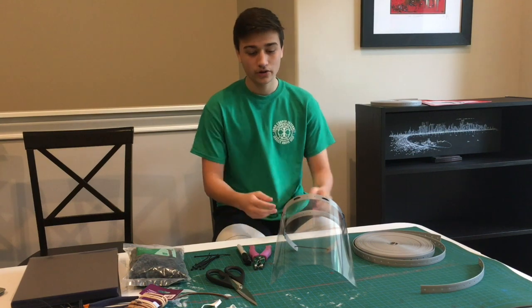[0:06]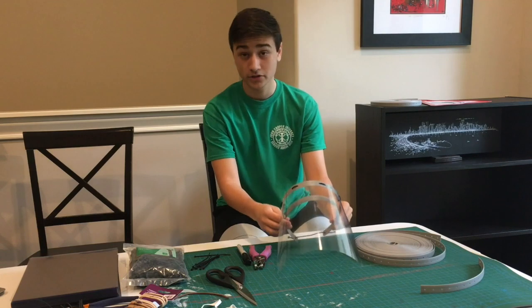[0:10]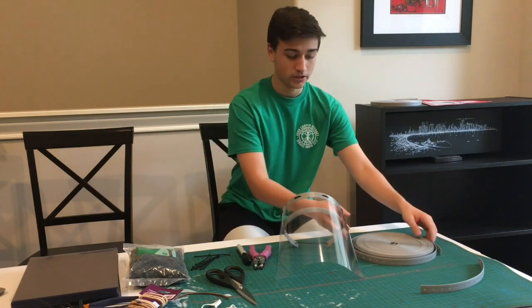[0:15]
Hey guys, this is a tutorial on how to make face shields so you can donate them to doctors and hospitals nearby. So starting off with some of the supplies and materials that you will need to construct this.
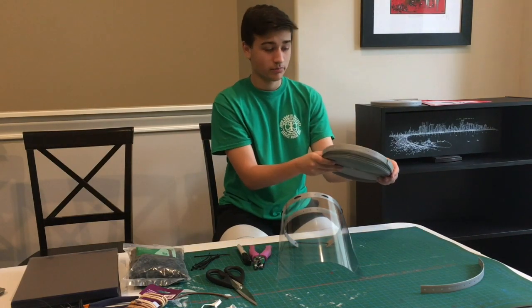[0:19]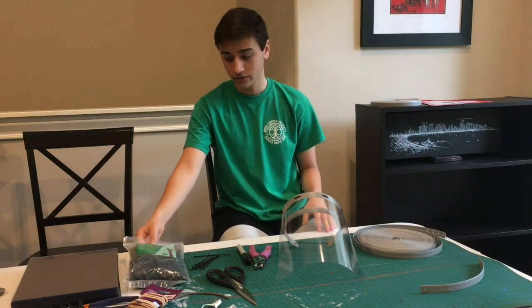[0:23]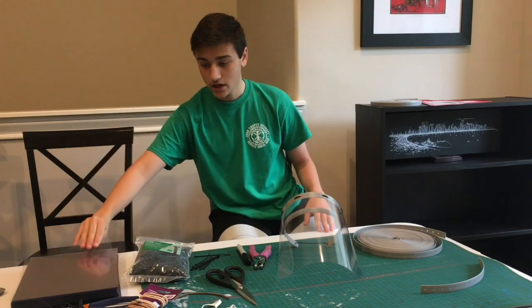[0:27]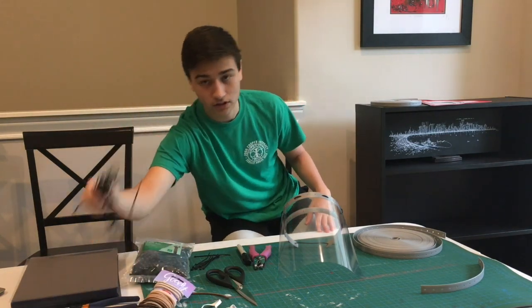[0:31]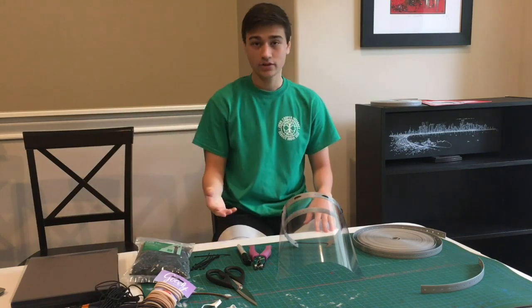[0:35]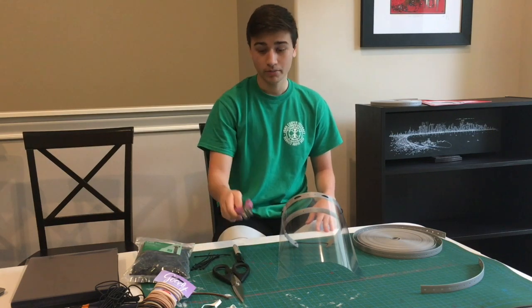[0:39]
You will need these 3/4 inch plastic hanger straps. You also need these 4-inch cable ties, clear binding sheets, and medium-sized hair ties. If you have elastic, you can also use elastic. And then for some of the tools, you'll need scissors, a single hole puncher, and a marker.
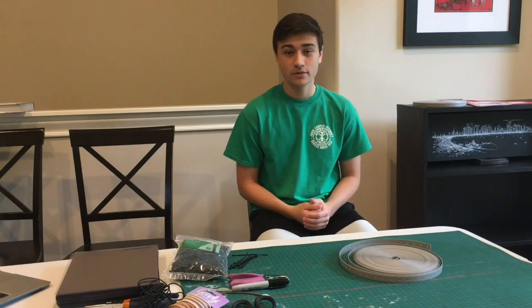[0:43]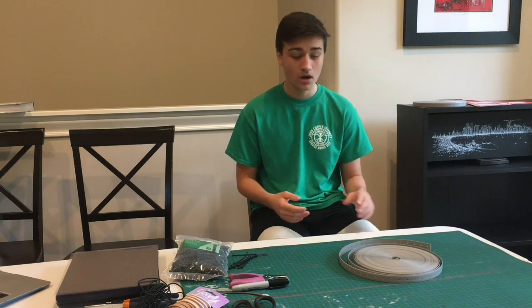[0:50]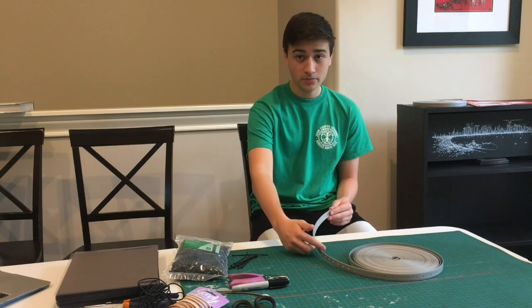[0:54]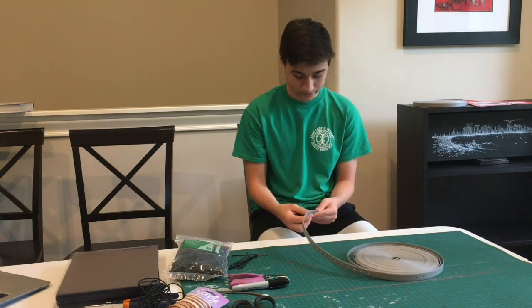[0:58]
Okay, so the very first step is you want to wash everything, disinfect everything, and wash your hands. You want everything to be as clean as possible. And then you're going to take these hanger straps and cut 2 strips of 22 holes. So you count the 22 holes and you cut 2 strips.
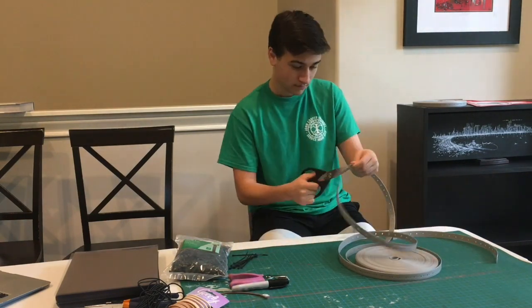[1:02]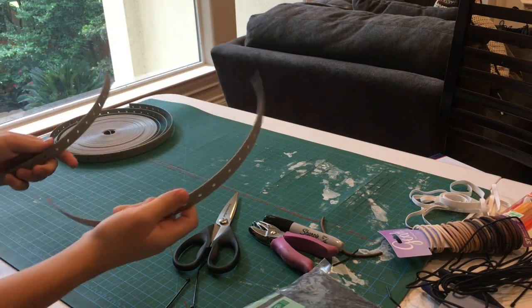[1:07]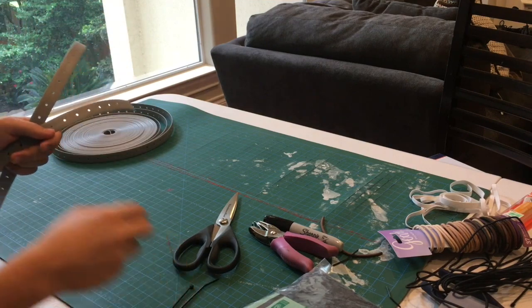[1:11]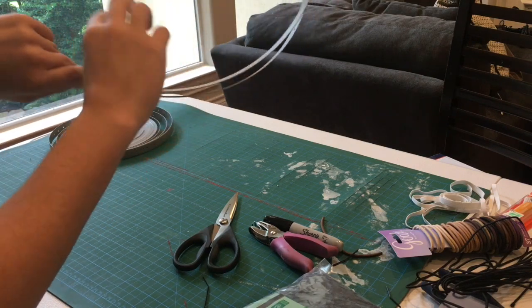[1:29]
Okay, so after you've cut the 2 strips of 22 holes, you're going to determine an outer strip and an inner strip, and then you're going to need 2 of the 4-inch cable ties. You're going to align it so that the first hole in the outer strip aligns with the 4th hole of the inner strip. You're then going to want to pass a cable tie through, like so, and you want to make sure that the smooth bit of the cable tie is showing on the outside,
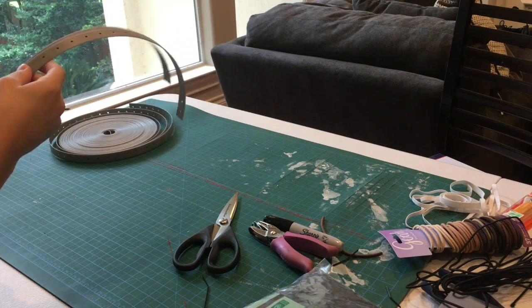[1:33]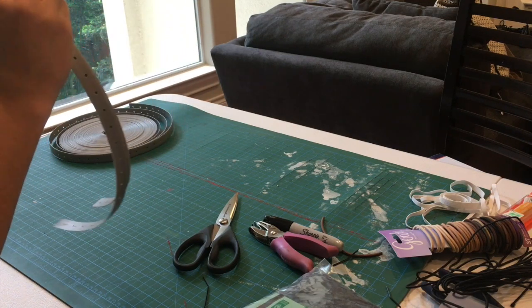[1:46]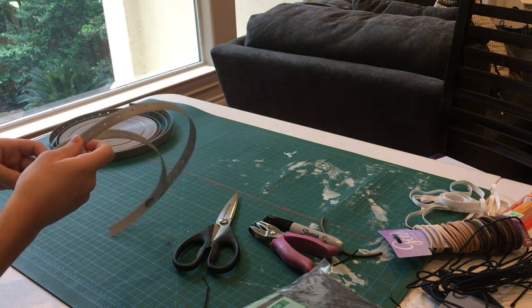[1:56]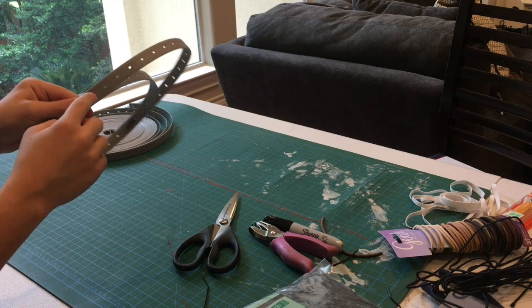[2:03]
that way it doesn't irritate the person's head. You're then going to pass the cable tie back through the 2nd hole of the outer and the 5th hole of the inner. And then you tighten the cable tie like so. And then you do the same on the other side, that way it creates a little divider. 1st and 4th, 2nd and 5th.
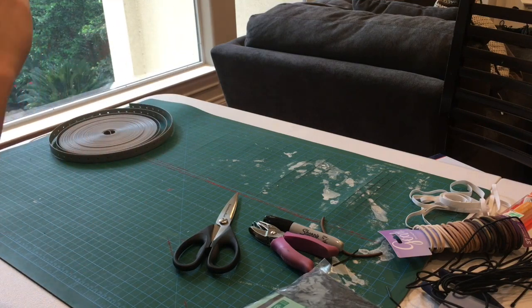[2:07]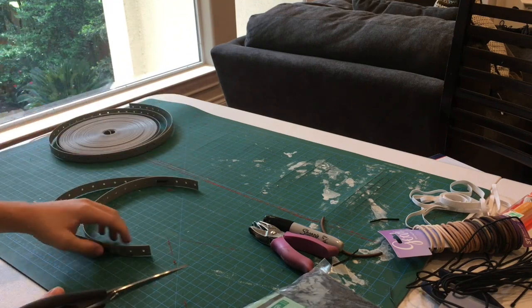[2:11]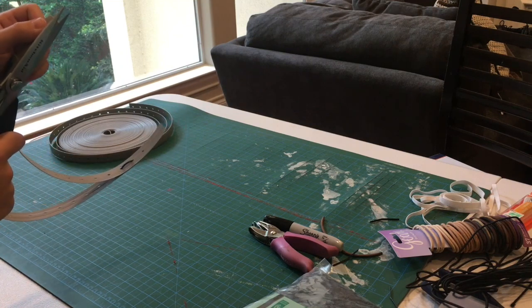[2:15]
Also, another thing I forgot to mention, this is optional, you don't have to do this, but I also like to cut the corners of the inner strip. That way it's not as sharp and doesn't irritate any of the doctors.
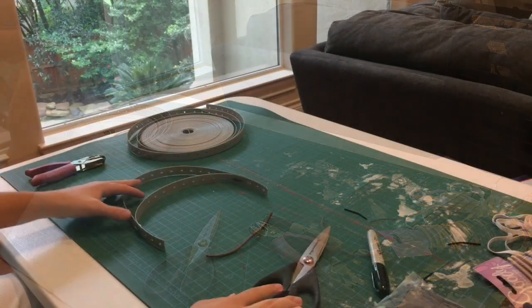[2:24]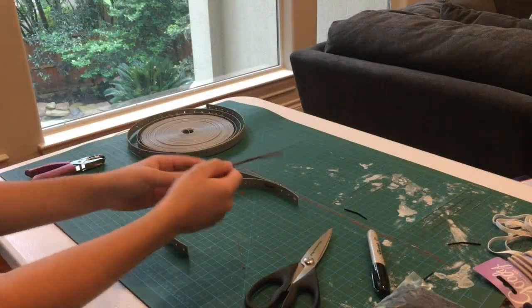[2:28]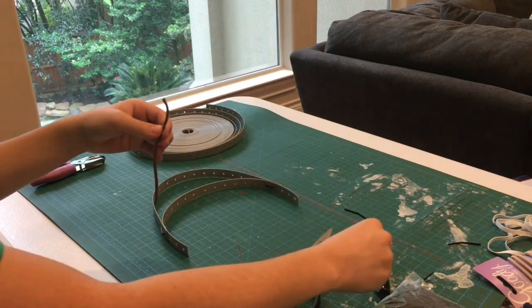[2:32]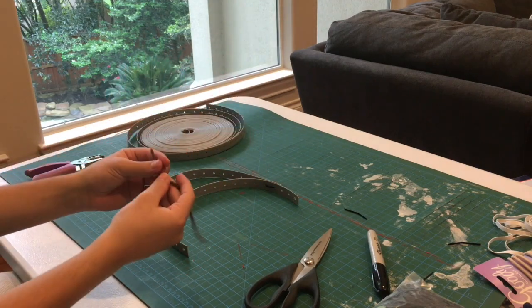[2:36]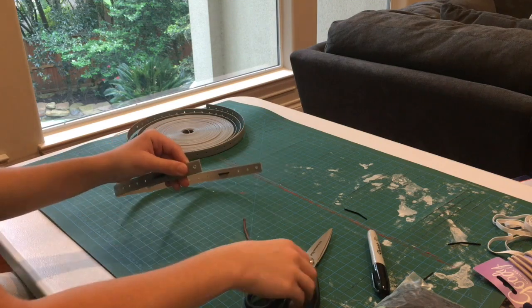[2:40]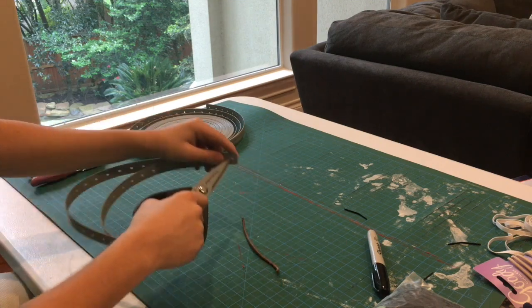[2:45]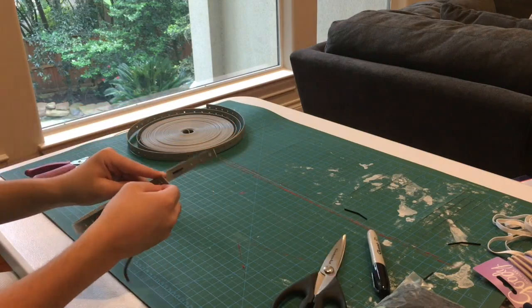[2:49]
So once you've got the 2 cable ties in, you're going to want to take a hair tie and cut it in half. I found that it's actually easier to cut it where the fuse is, and you're going to try and pass it through the hole. If you can't pass it through the hole because the hole's a little too thin, you can use scissors to widen the hole. When you eventually pass it through, you're going to need to tie a knot on the end.
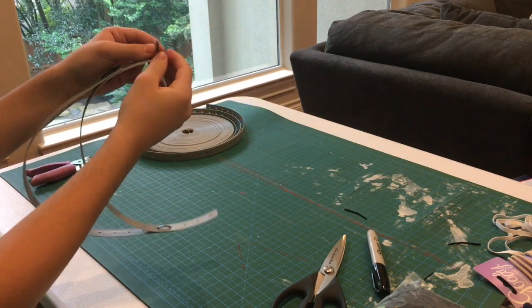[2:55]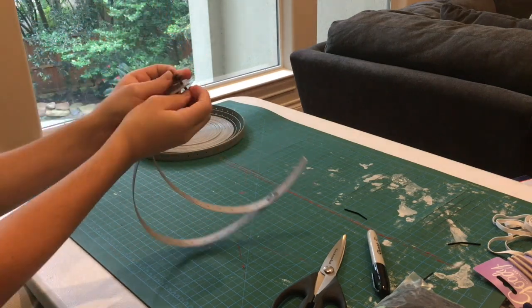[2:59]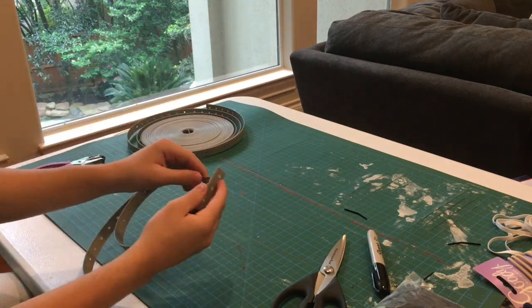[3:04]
So to tie a knot on the end, what you do is you have a little loop. You then want to pull this end around and through the loop so it has a knot. And then you want to pull tightly to tighten the knot. And then you do the same on the other side.
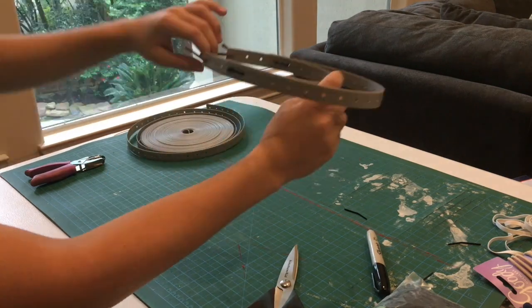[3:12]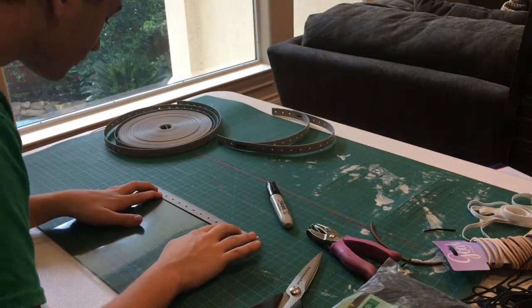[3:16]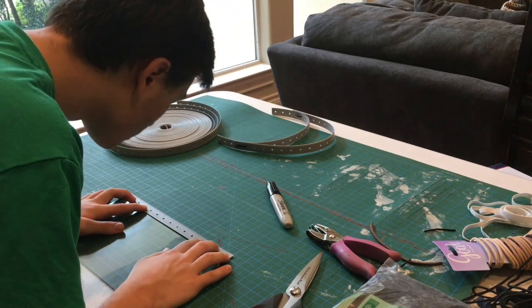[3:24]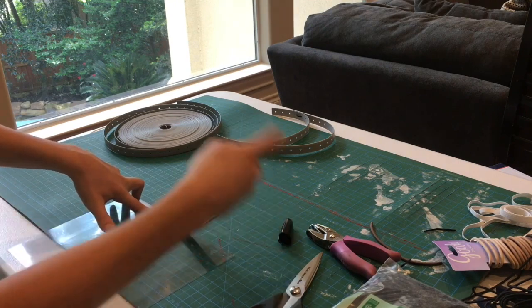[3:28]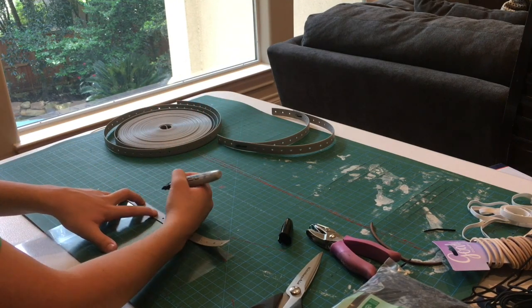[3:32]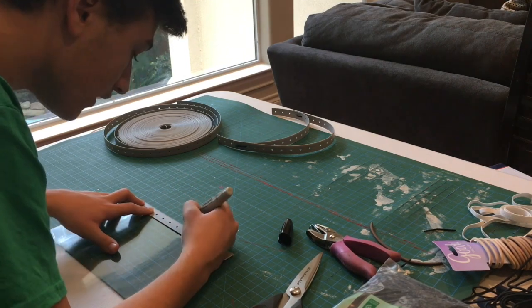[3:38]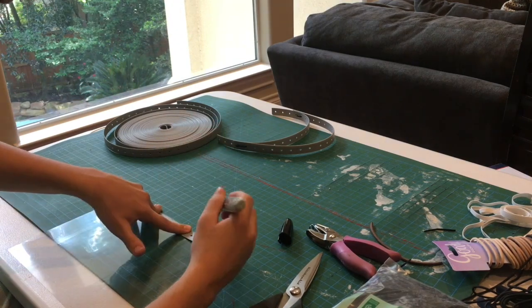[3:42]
So for the next step, you're going to want to cut a strip with 15 holes, and you're going to need to grab a binding sheet. You're then going to align it at the top, and you want the first hole to be slightly off the sheet but also slightly on it. With the marker, you're going to mark the 2nd and 3rd hole, and the 6th and 7th hole, and then you mark the 10th and 11th, and then 14 and 15.
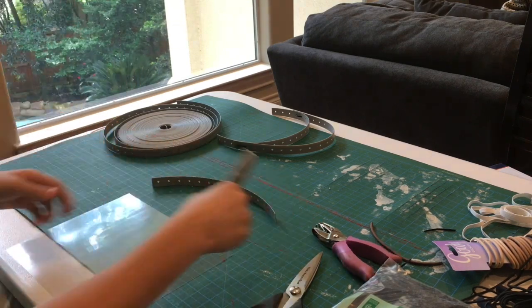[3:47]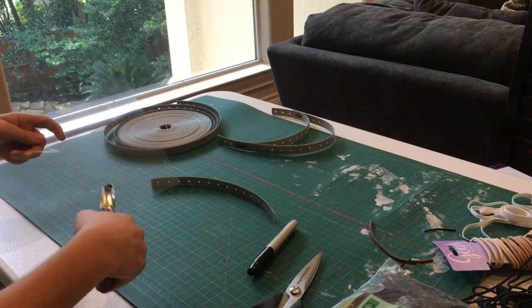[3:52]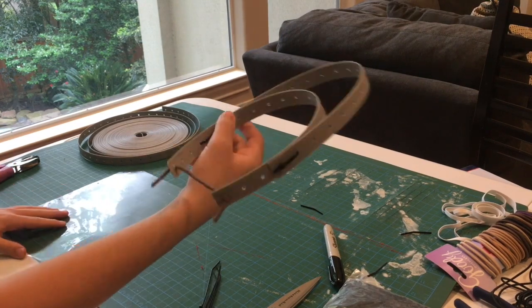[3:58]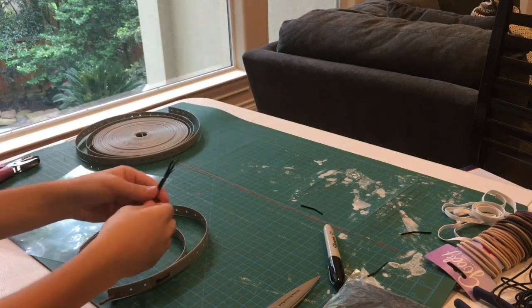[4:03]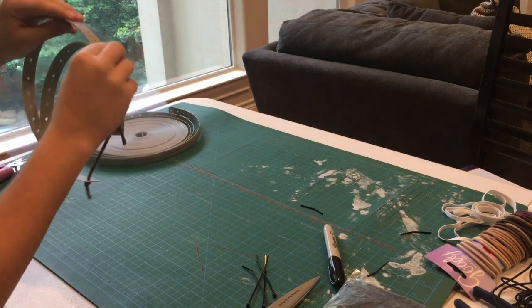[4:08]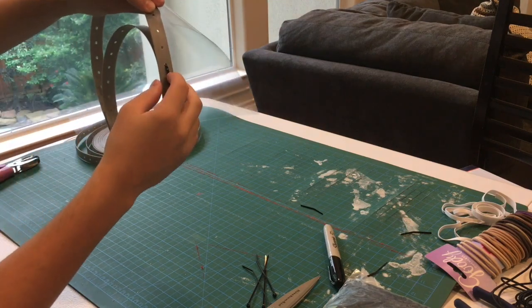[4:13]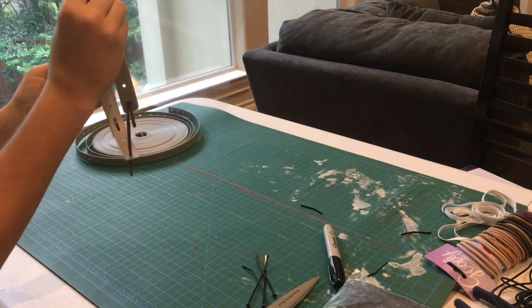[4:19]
And then with these marked holes, you're going to take your hole puncher and punch a hole at each dot you've marked. So now you're going to need the headset, the clear sheet, and 4 cable ties. The clear sheet now has the punched holes, and you're going to want to align it with the 3rd hole after the cable tie. So that's the cable tie, you skip 2 holes and you align the 3rd hole, and then you align it all the way around. So that way you have a face shield.
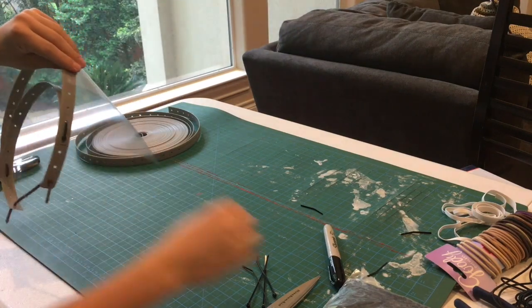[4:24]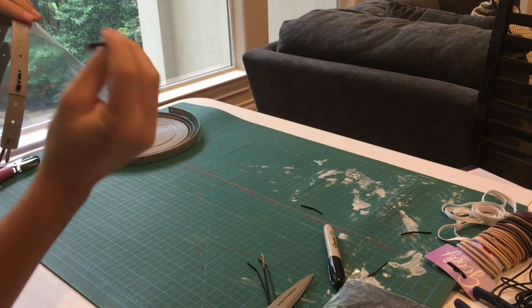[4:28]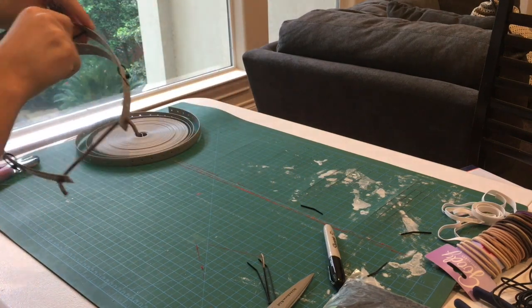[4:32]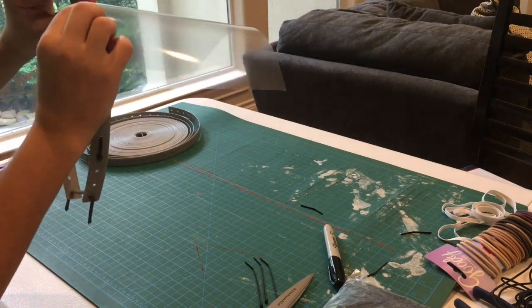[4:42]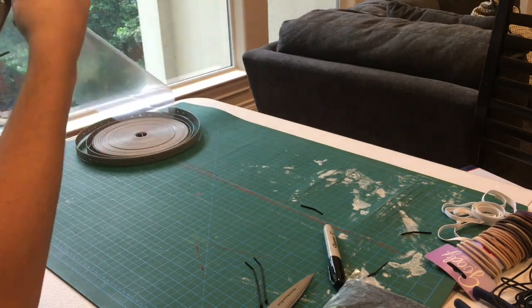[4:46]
Now you're going to take the 1st cable tie, and you want the smooth bit to be on the outside of the mask. So you pass it through the hole, and you don't tighten it yet till you put the other 3 on, because you might need a little wiggle room. So don't tighten it yet. You then go on and align the next 2 holes, and you pass the cable tie through those 2 holes. Again, with the smooth side of the cable tie on the outside.
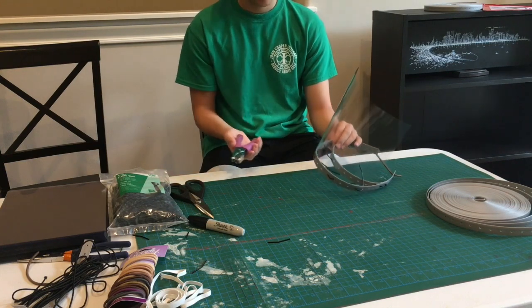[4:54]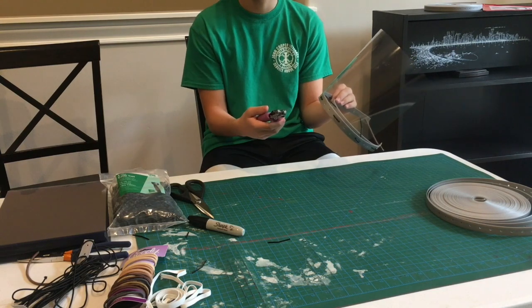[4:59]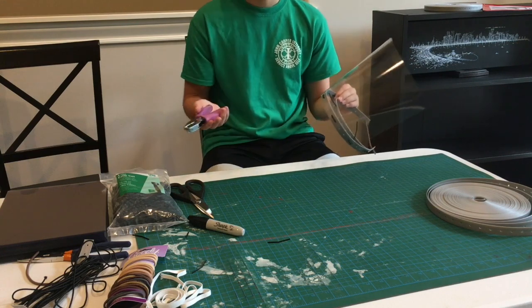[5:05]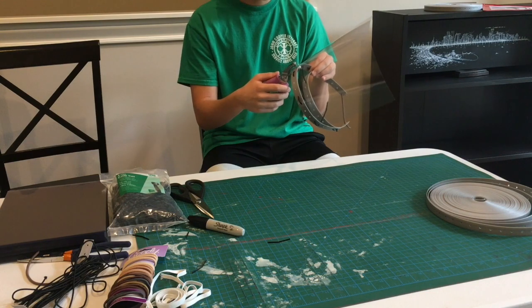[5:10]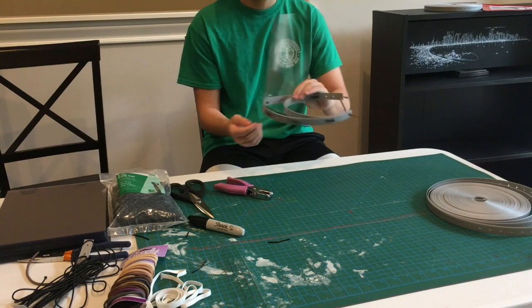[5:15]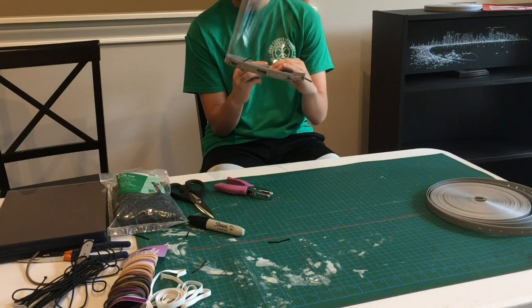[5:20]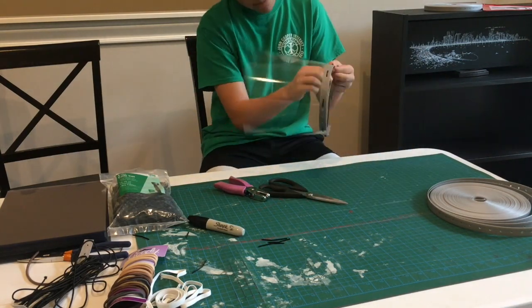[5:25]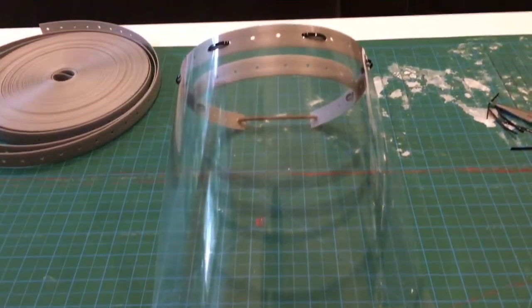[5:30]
Also, just a troubleshooting tip for you guys. If you have 1 or 2 holes that don't happen to line up, instead of just throwing the sheet away and wasting materials, you can take your hole puncher, like so, and just punch a hole where that one hole should be. And then you can pass the zip ties through. And once you pass all the zip ties through, you can then tighten all the zip ties. And there is your finalized piece of the face shield.